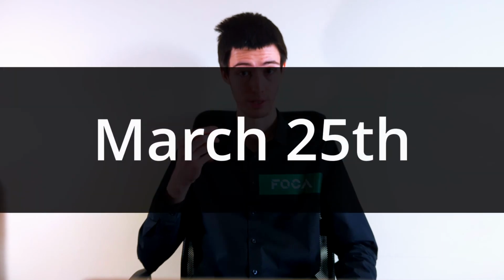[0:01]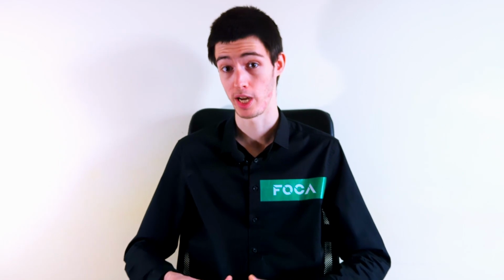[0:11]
It's March 25th, less than 2 months until Arada. By that time I realized that I couldn't just go with the ORCA one, even though it had such amazing results. The machine itself had many flaws which had to be corrected.
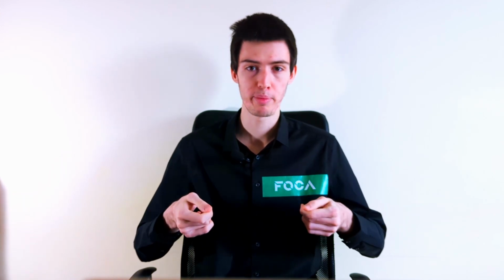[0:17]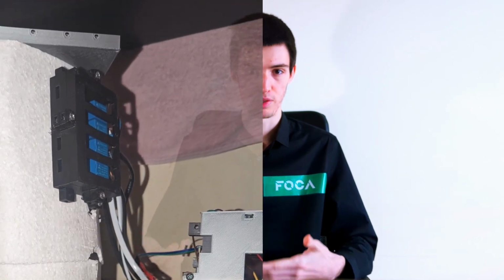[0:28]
First, there was no user interface. If you wanted to change anything in the code, you would have to manually move with your laptop from your workspace all the way to the ORCA one, plug in the cable and then hit upload. And I just couldn't get my head around the fact that if any of those AC cables would touch each other, then we would all burn the magical spark.
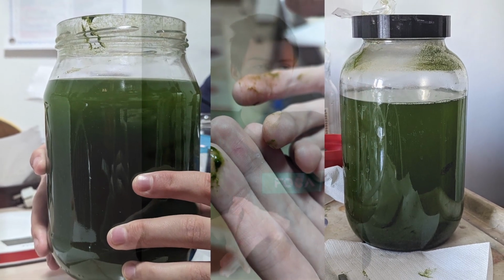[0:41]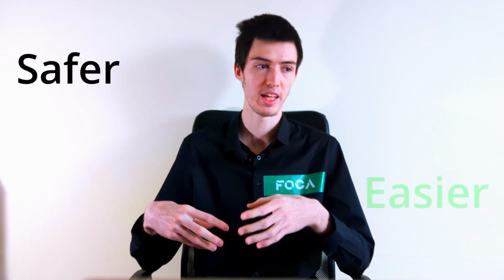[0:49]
Not only that, but the enclosure's door also had a slight play, so inevitably some heat would be lost to the outside. Now, my cultures have grown exceptionally well even with all these flaws, but there's a saying that if you can't make it better, then do it. With all of that in mind, I really just started thinking what would be safer and easier to use for anyone that owns an ORCA.
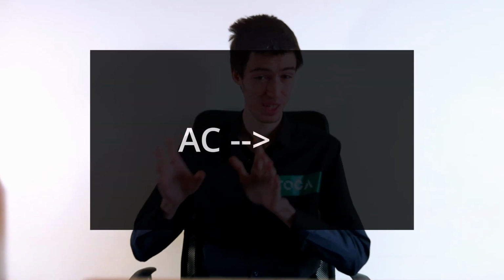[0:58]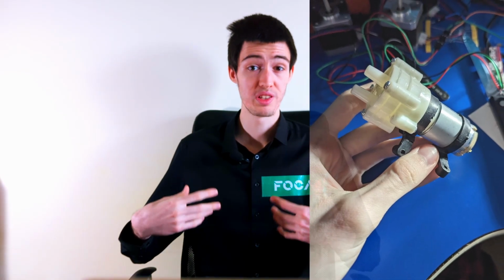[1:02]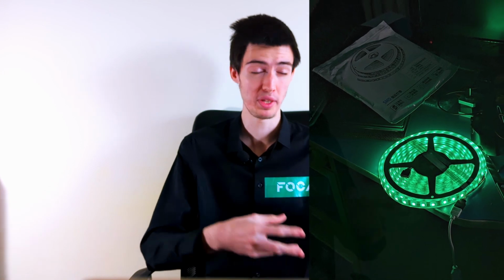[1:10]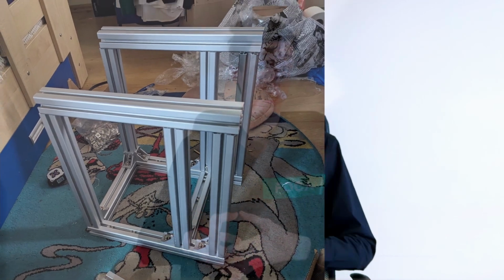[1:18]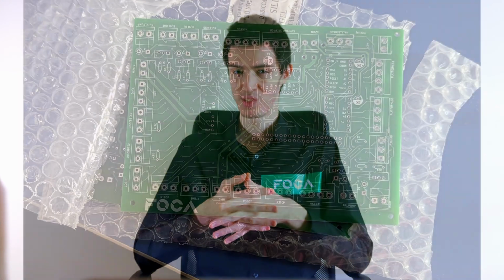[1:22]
So first, I changed pretty much anything that was on AC to DC, added a brand new power supply. The aquarium pump was now a 12 volts diaphragm pump. The LED strip and the light bulb will also be replaced by a 12 volt IP68 RGBW LED strip, which I could also place directly in the water. And to support all these amazing changes, I decided to make a much more rigid structure, which was now made out of aluminium.
And it was also time to centralize all the wirings. Let's face it, it's extremely unpractical to have to go to your machine every single time you want to upload a new firmware. So, let me introduce you the Raspberry Pi. As a quick disclaimer, this is Raspberry Pi 2, all the other Raspberry Pis I have are either burnt or in one of the ORCAs. And by replacing the Arduino with one of these, a whole new world of possibilities opened to me, and that including adding a real camera.
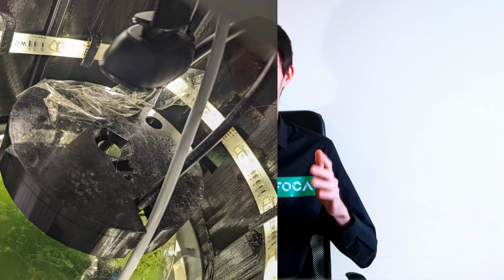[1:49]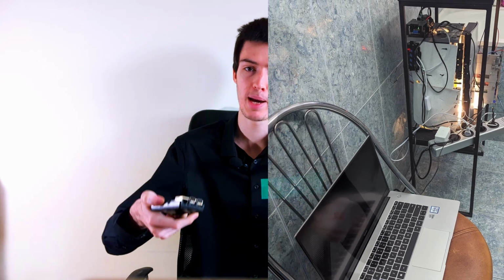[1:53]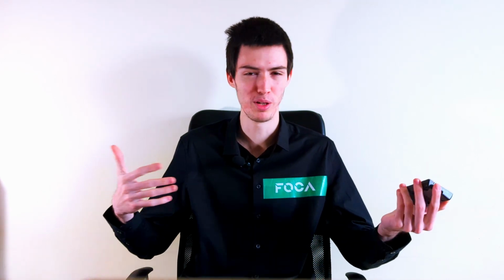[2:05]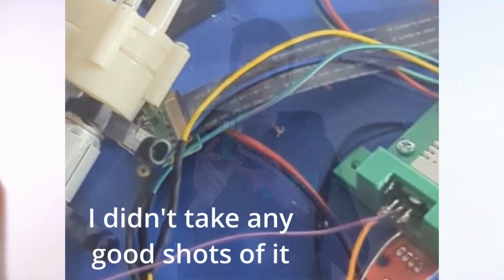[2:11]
Because yes, the ORCA one did have a camera, but it was a USB one, and you were supposed to add your laptop on top of the shelf you were sitting on and watch it from there. And to be honest, it doesn't sound good at all to have your laptop stuck on your ORCA. And say you have multiple ORCAs, then what are you going to do? Buy multiple laptops, one for each ORCA? What? And the camera that I added is one that connects directly to the Raspberry Pi. What this means is that if you connect it to the internet, then you're going to have access to it from anywhere in the world.
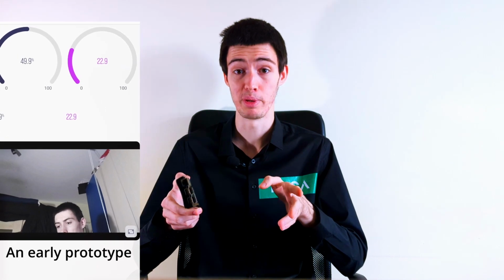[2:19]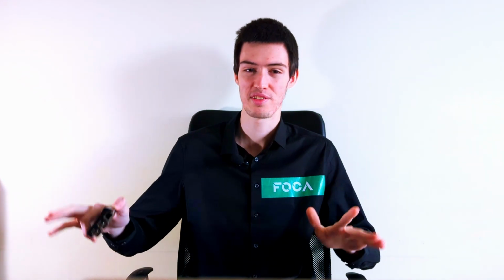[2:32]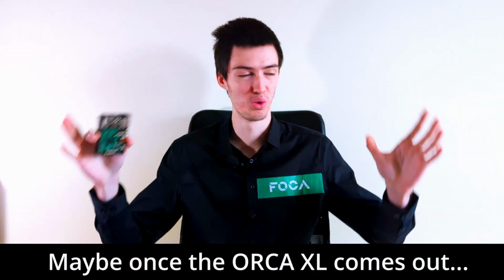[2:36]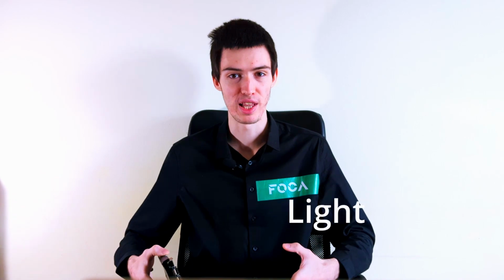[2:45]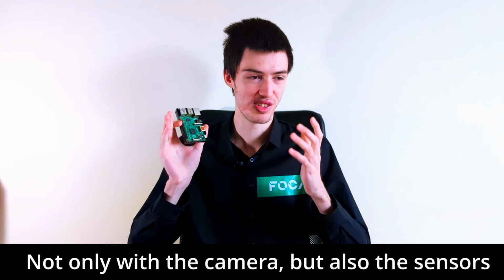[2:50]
And not only that, but you can also run artificial intelligence models on it using TensorFlow or whatever custom model that you train yourself. And this is a huge improvement from the Arduino, because imagine an AI just taking care of your entire cultures. Say you have multiple bioreactors, all of them sitting in a huge room, and why would you have to bother to check each and every one of them every single day when you can have a program, a software telling you if they have enough light, if they need more nutrients, if they need more carbon dioxide, and all of this is just so amazing.
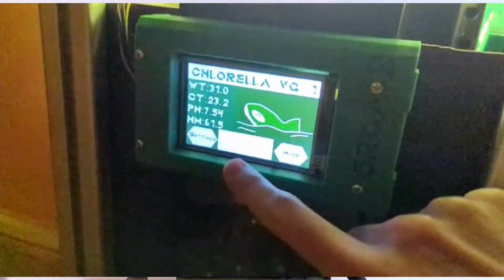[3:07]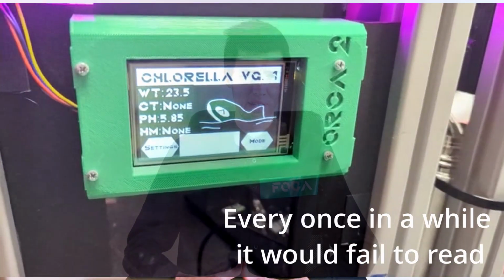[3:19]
Now, getting over the pink and rainbows that using Raspberry Pi was, I also kind of shot myself in the foot by using it, and we'll get on that later. Other than the Raspberry Pi, there were quite a few new parts. Before all, finally, a touchscreen with a friendly user interface, which also worked because the ORCA 1 also had a screen, not a touchscreen, which now allowed us to control the machine from outside the Python IDE, a DHT22 for real-time temperature and humidity detection in a room, where I also shot myself in the foot again.
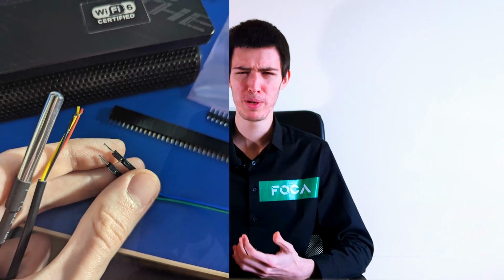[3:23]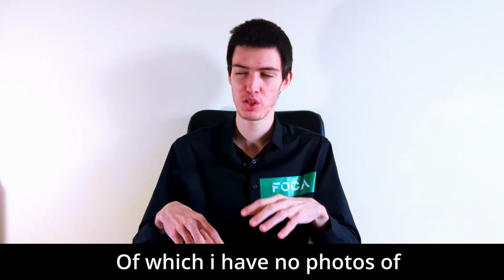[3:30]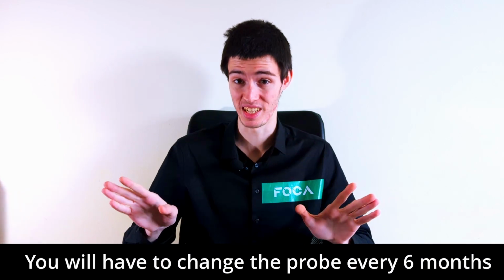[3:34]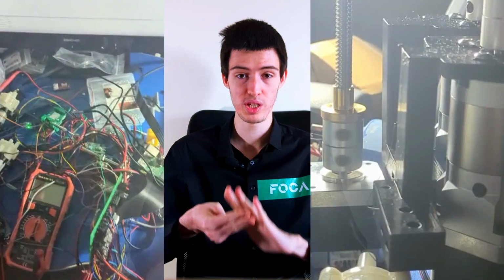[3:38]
Two DS18B20s, which were much cheaper than their DHT counterpart and also much more reliable. A brand new industrial pH sensor which can stay submerged for up to 6 months continuously. Just that easy, no maintenance. And for the movement components, we have 4 end-stop modules, 1 Hall sensor, 3 stepper motors, and 3 drivers for them as well. My wish for a fully enclosed photobioreactor led me to designing a machine which would rise its growing cell up and then retract it while also sealing the chamber.
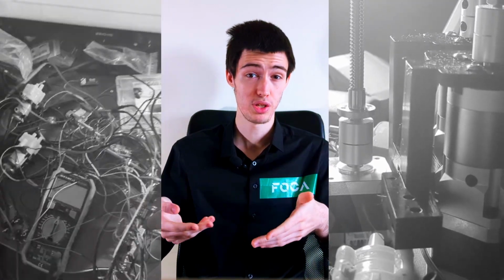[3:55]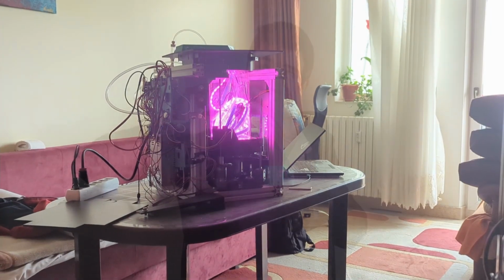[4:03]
This is why I mentioned adding 3 stepper motors and multiple position sensors to determine where the cell is. The reactor has 2 main moving parts: 1, the locker, and 2, the platform. It brings the vase up, and the locker prevents it from spilling any water.
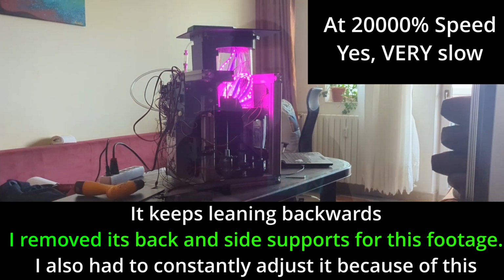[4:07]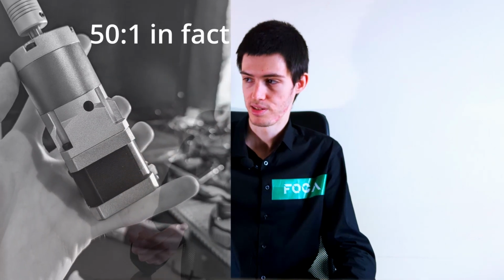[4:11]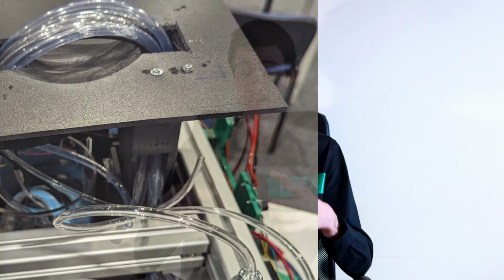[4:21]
This is because even though the stepper motors are really slow, maybe because of the huge reduction ratio gearboxes, with vibrations comes the risk of water getting out of the glass, which is extremely bad when you're working with electronic components. The locker makes sure this never happens, and it also serves an auxiliary function to guide all the cables and tubes inside the cell.
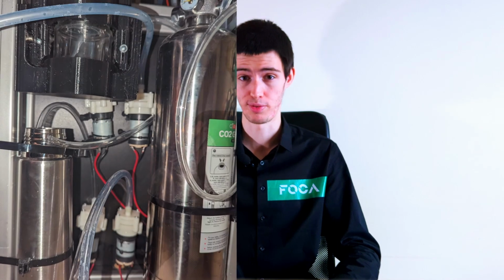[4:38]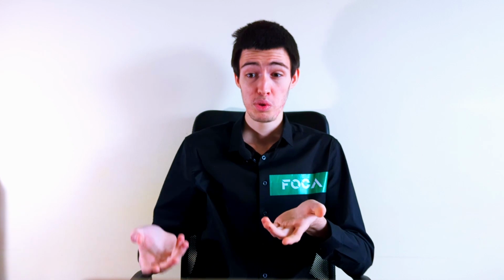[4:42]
For the ORCA one, I had to go every 3 days and manually insert my nutrients mixture into the culture, which was heavily impractical. What if I went outside the city? So, for the ORCA 2, I decided to add 4 different pumps. 1 for the nutrients, 2 for the special in and out, in case you want to extract a sample of your culture and analyze it, or you want to insert some other solution into the water other than the nutrients that you are already giving.
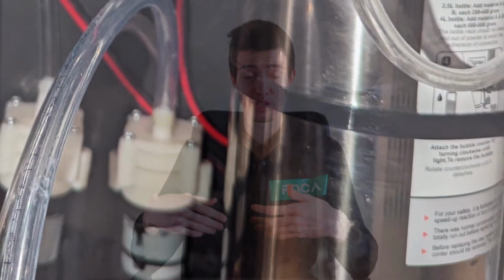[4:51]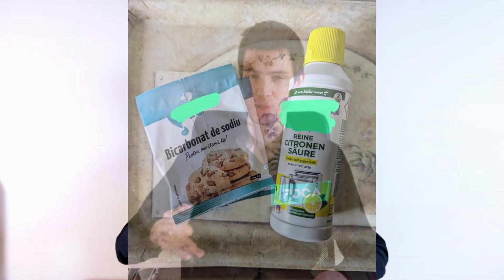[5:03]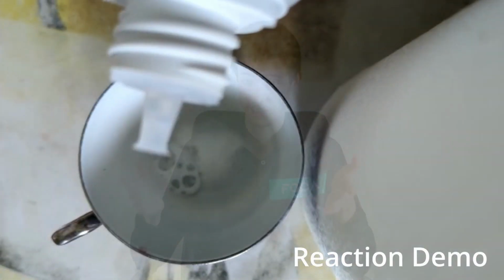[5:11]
And the last pump was reserved for the bubbling and also the heating. We'll talk about that later. And the last addition to the consumables was a 4 liter canister of CO2, which you could easily refill using baking soda and citric acid. What this means is that you don't have to spend any money on those CO2 canisters and you can manually refill them for pretty cheap at home with zero experience.
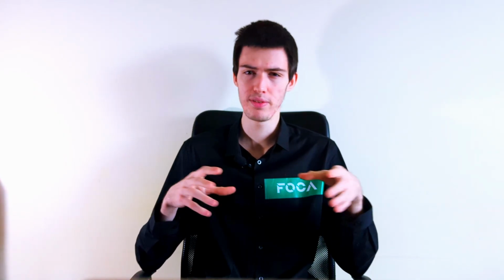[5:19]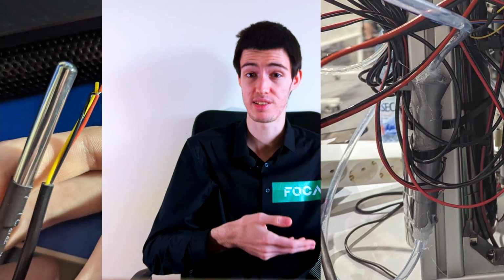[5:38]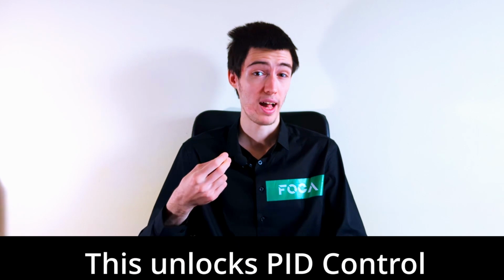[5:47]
I mentioned heating and bubbling were happening at the same time. Well, this is because on the previous ORCA I had a dedicated aquarium heater which was consuming about 10 to 25 watts to do its job, which is at least 10 times more than what the ORCA 2 takes for the same job. On the air puffs getting in the water, there is an annealed PLA station in which lays a DS18B20 sensor and a resistor which constantly heats up according to the values which the sensor is picking up. By heating the resistor to the values that we want, which is being read by the sensor, we can achieve the same results as the resistive aquarium heater, and all of that for roughly 1 or 2 watts.
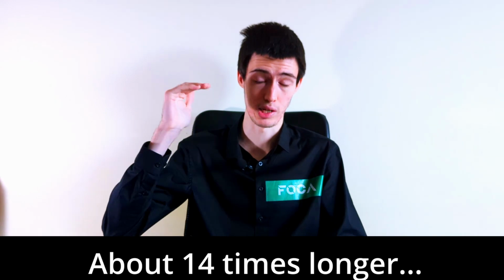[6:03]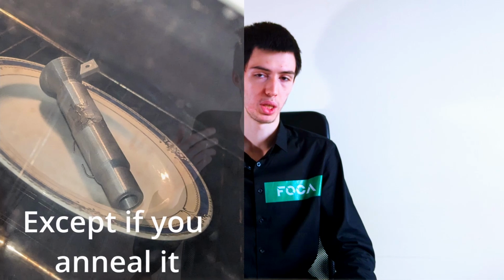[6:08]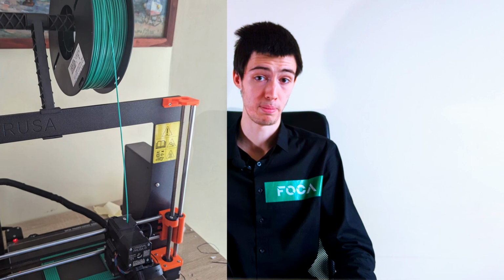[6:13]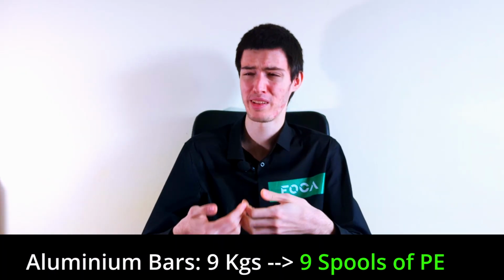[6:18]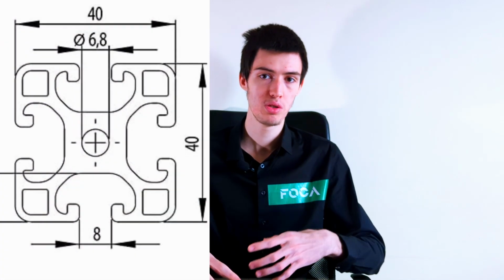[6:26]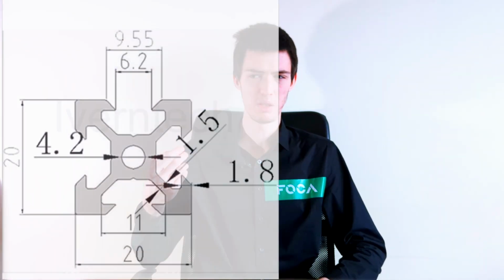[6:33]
The result is a smaller electricity bill, but as a consequence, we'll have to wait longer until the water reaches our desired temperature. PLA is one of the worst materials to work with in warm environments. So for the next machine, I decided to make most of my parts using PETG. My initial thought was to 3D print the entire PBR, which was heavily impractical and really expensive. So with that in mind, I discovered aluminum profiles exist and ordered multiple 40x40 extrusions according to the 3D models that I made, which was kind of a huge overkill in terms of strength, as I could have easily done everything with only 20x20 ones.
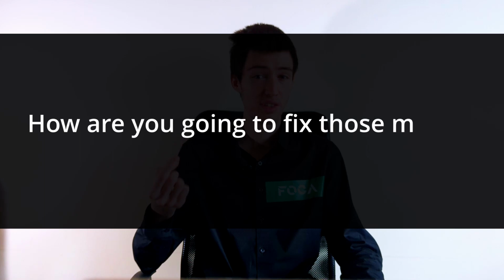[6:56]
As for the walls, there was no way I could 3D print 30x40 centimeter objects on my Prusa, so I purchased some off-the-shelf PVC boards and headed to my uncle's so that he could help me with his professional tools to cut them all for me, where he did an amazing job considering how fast he did them all. Even with the walls and structure ready to rock, there was still one question: how are you going to fix those motors and linear rails on the bottom of the reactor?
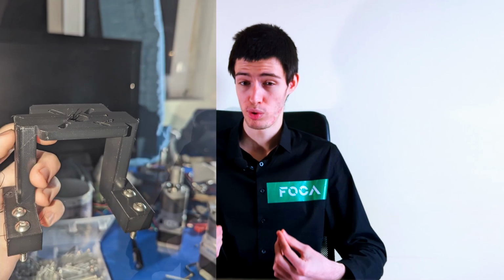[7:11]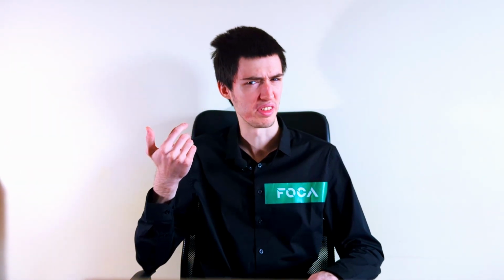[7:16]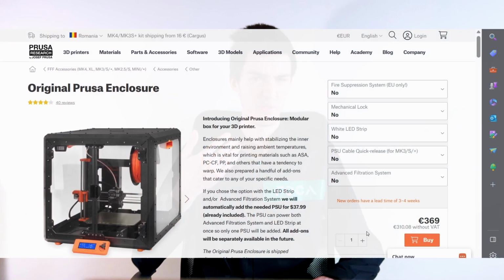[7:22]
Which brings me to polycarbonate. Also known as one of the strongest 3D printing materials, it is perhaps the king of DIY 3D printing. So I decided to give it a shot on my Prusa and print the most critical and stressed parts with it. Ideas are all good and all, but how are you going to print it? Polycarbonate requires an enclosure, otherwise it's going to warp like crazy. And the original enclosure for the Mark III costs roughly 370 euros, and that without any of the add-ons that Prusa offers. So I decided to use my brain and obtain a more affordable solution.
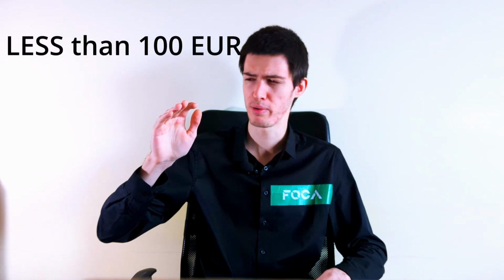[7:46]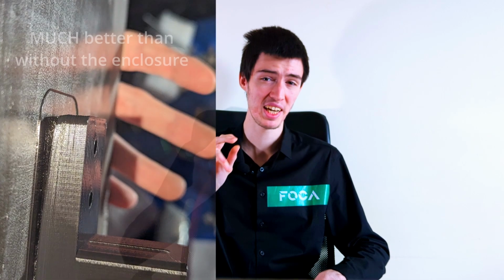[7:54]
Introducing fancy aluminum foil. Just wrap it around the printer, leave a gap for an air filter, and also to be able to reach the power supply and its shutdown button, and a camera on top. And voila, just like that, for less than 100 euros, I would say even less than 80 euros, you've got yourself a kind of functional enclosure, which will print polycarbonate just fine with only a tiny bit of warping.
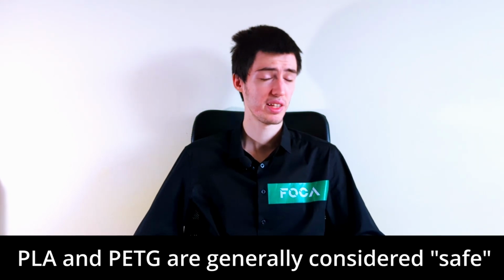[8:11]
The rest of the 3D printed parts were all made with PETG, except for the heating chamber, which allowed me to remove the enclosure and finally be able to breathe well in my room, as polycarbonate is known to be toxic due to the presence of bisphenol A or BPA. With PLA and PETG, you can easily stay in the same room with the printer.
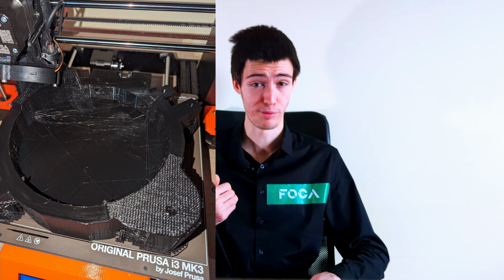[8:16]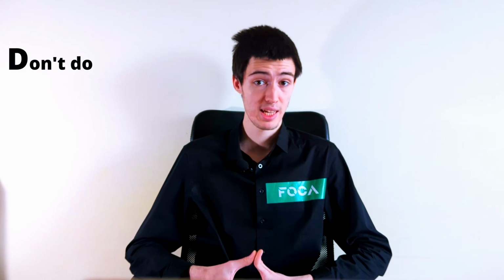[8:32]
And as a fun fact, my longest print, the Sail platform, took 4 days to print. This means the Prusa has been working continuously for more than 96 hours. Aside from the printer being incredibly reliable, it was also super silent, as since I had nowhere else to place it, I slept in the same room as the printer while it was on. And honestly, I didn't even notice it.
Obviously, nobody should be spending so much time in the same room as the printer you're using, but because of space and financial constraints, I had no other option. If the ORCA 1 was completed relatively easily since it cost roughly 600 euros for all the materials and components, the ORCA 2 was obviously a much bigger challenge for my family.
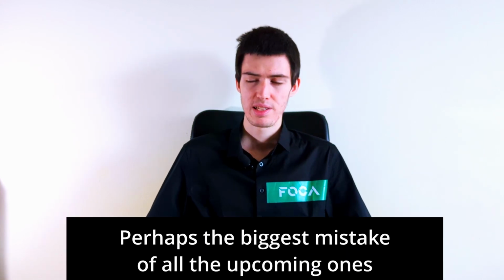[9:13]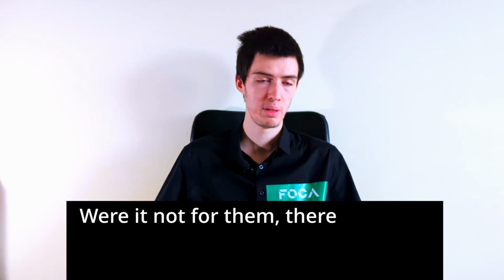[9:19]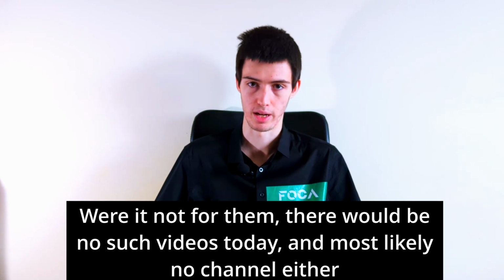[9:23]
To achieve this project, we did have 2000 euros sent to our high school from some amazing people that decided to sponsor my projects, but due to a couple of reasons we were not able to access them. Having made such huge mistakes, it meant we had to rely on our own funds. Here, I'm incredibly thankful to my family for supporting me in everything that I've done, because the funding of ORCA 2 was no easy task.
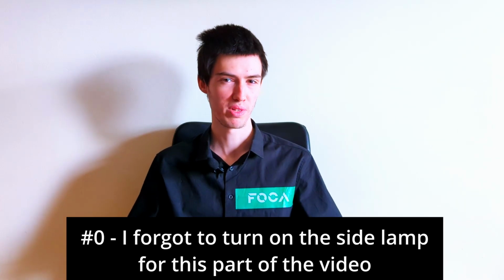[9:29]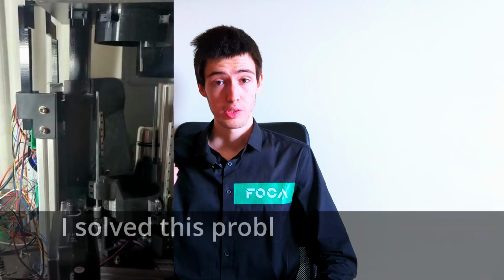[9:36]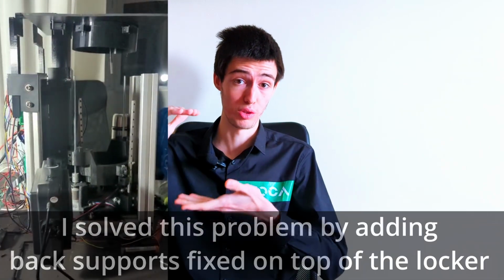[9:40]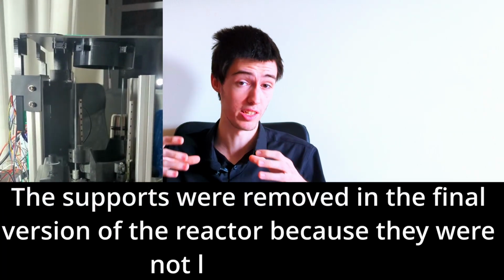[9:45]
There are two major mistakes that I made during the ORCA 2 development. Firstly, the locking mechanism is kind of non-functional due to the fact that by design it doesn't have any support to keep it perpendicular to the ground. And whenever you try to lift it, you have to manually hold it by hand in a certain position so that it lifts up. Otherwise, it won't work.
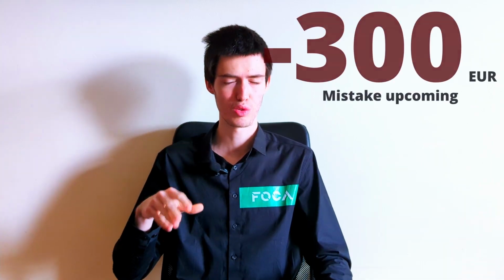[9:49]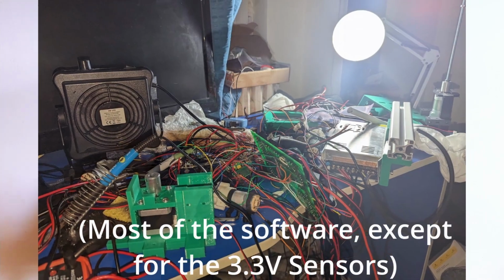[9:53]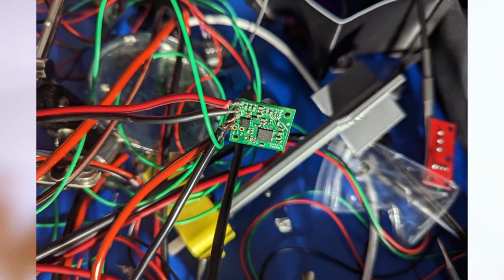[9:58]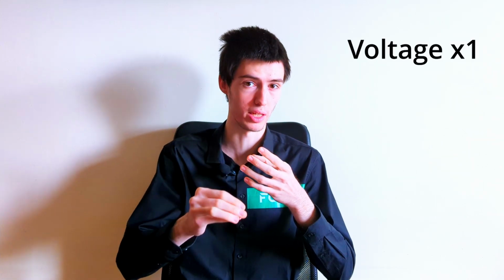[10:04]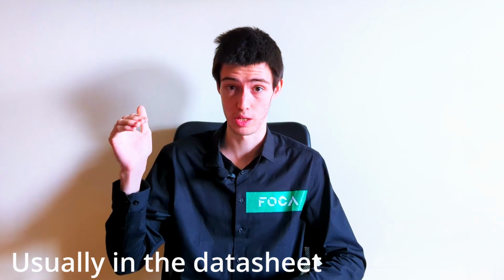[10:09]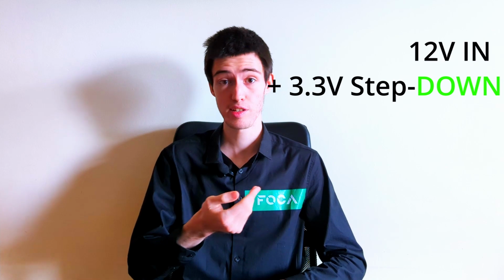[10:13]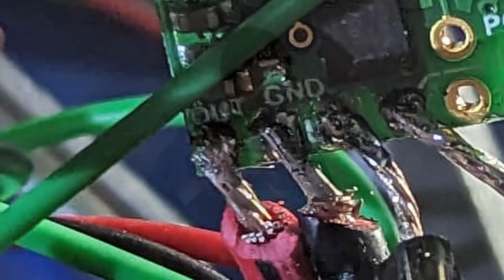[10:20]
And secondly, just 2 weeks before the contest, everything was done. The motors, the Raspberry Pi, the sensors were attached to the main board. And what I did was to attach the 3.3 volt step-down modules to the system. So what step-down modules essentially do is that you input some voltage and they're going to output a certain fixed voltage which is rated by the manufacturer. Say you input 12 volts, if you have a 3.3 volts step-down module, then that is going to output 3.3 volts. Now, of course, any step-down module has some input pads and some output pads.
And the way you should wire it is that whatever comes from your power supply should come to the input, and whatever goes to your electronic sensors, whatever, is going to be on the output. Well, what I did was to invert the channels, and instead of connecting the power supply to the input, I connected it to the output, and the sensors, instead of being on the output, they were on the input. And that was a devastating mistake.
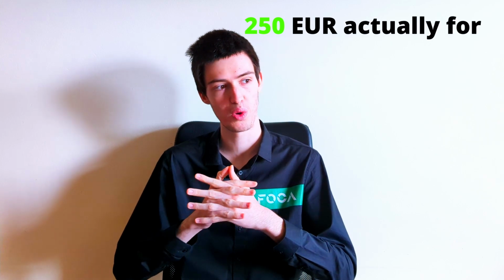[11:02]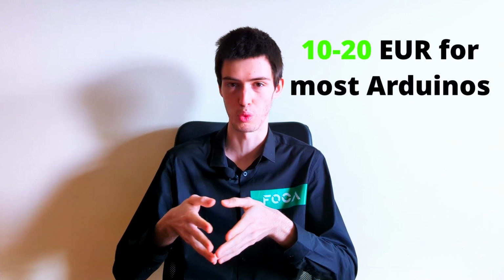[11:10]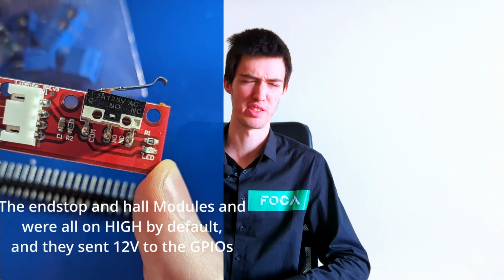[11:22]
As I mentioned previously, by using the Raspberry Pi instead of the Arduino, I kind of shot myself in the foot, because to replace a Raspberry Pi would cost you around $100 to $200, depending on which model you got. Whereas for an Arduino, you can easily find one for $10 to $20 or euros. They're really cheap. And by getting in 12 volts from 7 different channels, 7 different pins on the Raspberry Pi, the board was completely done.
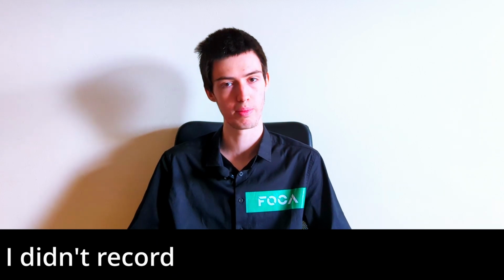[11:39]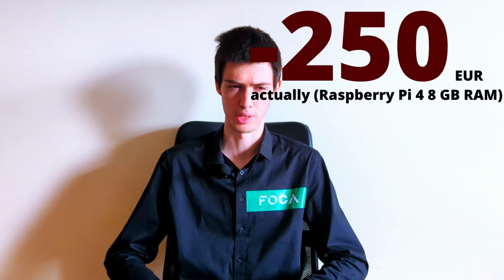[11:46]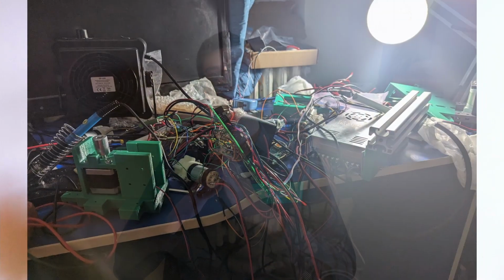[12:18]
And even though I felt really bad about what I just did, I knew I had one more chance. So my electronics teacher, he's not actually from high school, he's from somewhere else. He was kind enough to send me a Raspberry Pi 2 from his inventory. I looked at the electronics, I looked at everything I could to see what was the problem, but the only issue that I spotted at first glance was the DHT sensor being wired the opposite way.
So the ground was to the VCC and the VCC was to ground, and that alone I don't think was capable of sparking and getting all the smoke out. I did fix that problem, yes, and I started checking again to see if there were any problems, and I didn't see any problems. I thought it was from the sensors, not from the step-down modules. I thought that they're from Pololu, and Pololu is supposed to be one of the best step-down module manufacturers, so it can't be because of that.
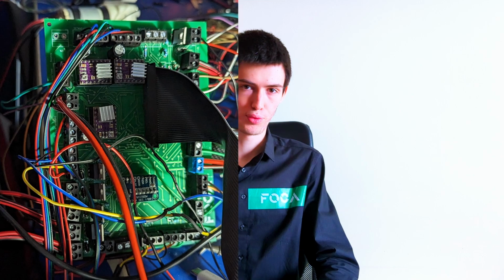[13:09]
And then foolishly I connected everything again. But the only different thing that I made this time was that on the board there are 3 inputs, so the 12 volts, 5 volts and 3.3 volts line. And I disconnected the 3.3 volts line because that was the most recent one I added, and before that everything was working well, and it was working really fine.
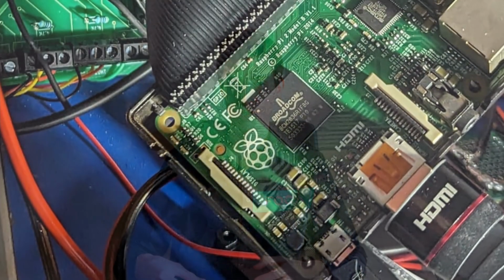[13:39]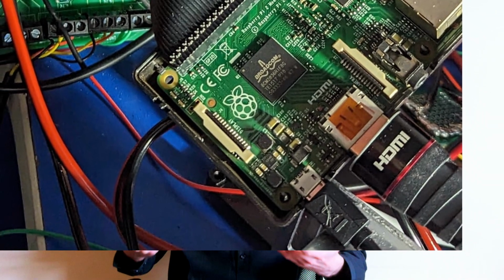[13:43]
I still had the power supply on, I had the Raspberry Pi 2 on, and then thinking I solved the problem, I connected the 3.3 volts line again, and it just blanked. The screen was black and there was no more connection. Also, both of the power LEDs, which are supposed to blink on any Raspberry Pi, were now off. In that moment, I had a thought of quitting, but it's not about that.
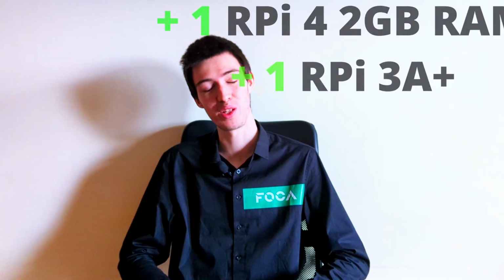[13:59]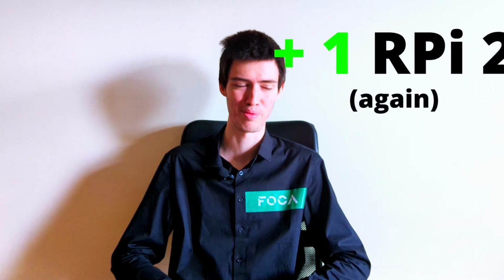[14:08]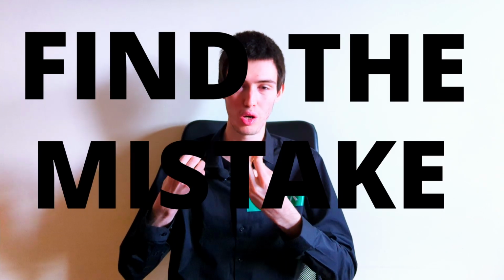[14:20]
And to my surprise, my parents talked to each other, and they told me, here's 200 euros more, spend them on whatever you like. I didn't really know how to respond to that, and with that being said, I also told my electronics teacher what just happened, and he also told me he would give me a Raspberry Pi 2, and I was just amazed by how lucky I am to have such amazing people around me. But even with all of this, I realized that if I wouldn't find the root cause of all of these problems, then I would end up burning all of the brand new Raspberry Pis as well.
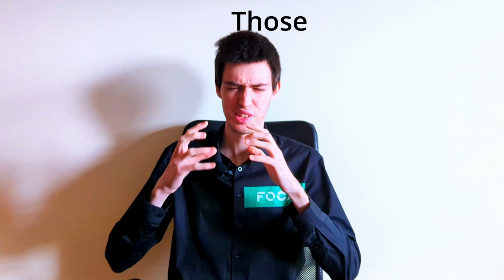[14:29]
And I had like 24 hours to think and just tear down all the wirings and see what was the problem. And as complex as I thought it would be, it was just very simple. As I said, the issue was not a quantum physics problem, but rather just a flipped wiring. And after I resoldered everything, I tested the circuit again. It did not burn. The sensors were also reading.
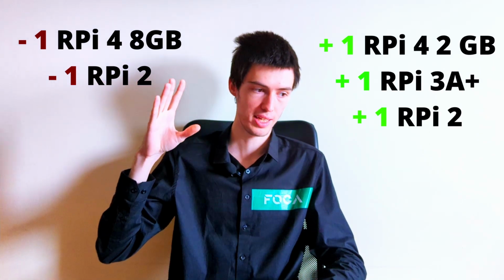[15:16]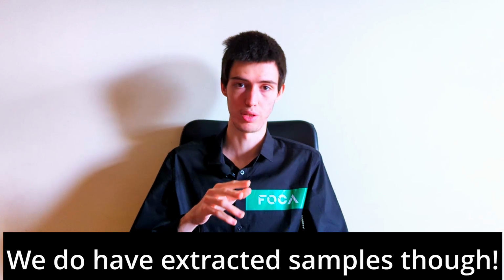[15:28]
By that time, also the 4B and the 3A Plus came, but I wasn't willing to take the risk to burn another 4th version again. Now, with that being said, I just want to thank my family and my electronics teacher again for all the support they gave me, because burning 2 Pis and then being given 3 more to experiment with is, I believe, beyond being human. Because there was just 1 week left until the robotics championship and I still had to do some minor adjustments to the code, I did not take any videos of it while working.
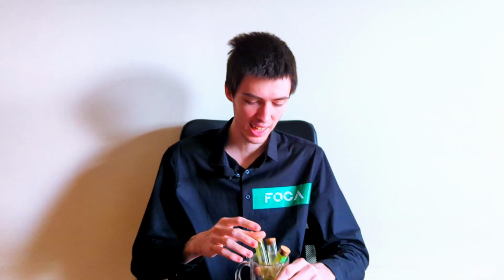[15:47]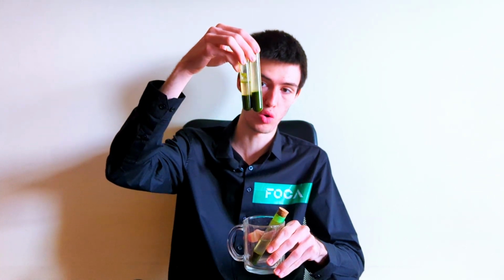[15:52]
What I did was to take about half of the Chlorella vulgaris that I had in my previous bioreactor and insert it in the ORCA 2. And just like that, it worked. And in those 5 to 6 days of staying in the PBR, again, it was a semi-mature culture, they managed to grow so much that I was able to extract exactly 2 samples. These 2 samples are from the ORCA 2 and the only labeled one is from the ORCA 1. Can you tell the difference?
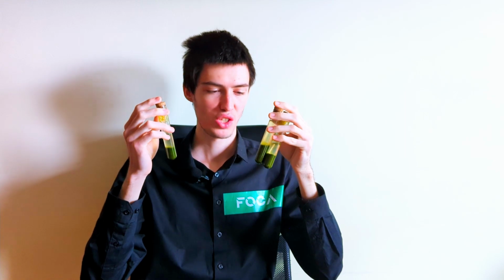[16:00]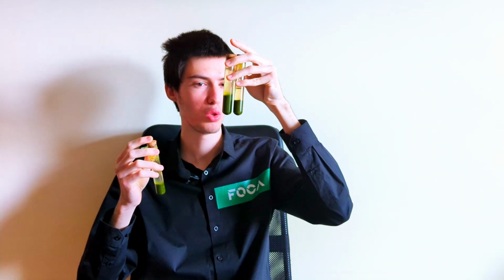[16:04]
I don't think so. Overall, both of the ORCAs have done an amazing job at growing these cultures, but as far as I see, the ORCA 2 seems to have grown them to a higher maturity state. As you've seen, it's just as if time was on our side. Everything was finished exactly in time.
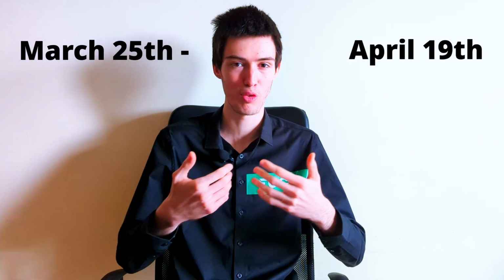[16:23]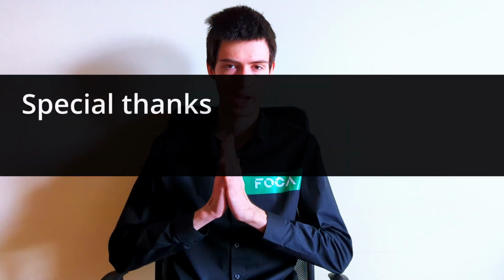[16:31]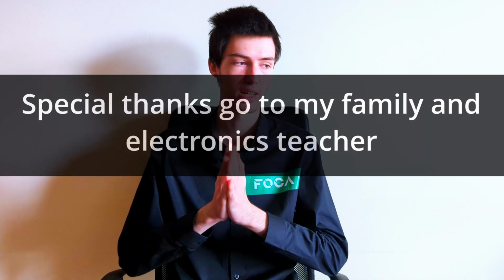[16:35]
I designed, ordered, 3D printed, assembled, and programmed everything. And all of this was just within the 25th of March and the 19th of April. It's kind of amazing what one can do just with his free time and whatever is left during high school. And I'm extremely thankful for everyone who has supported me so far, because without them, I wouldn't be here and today we would have no story to talk about.
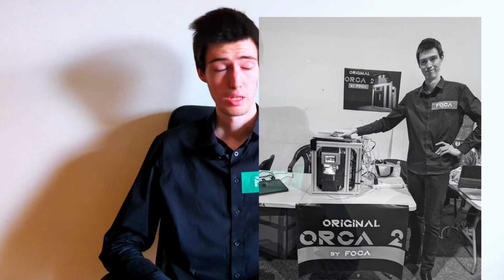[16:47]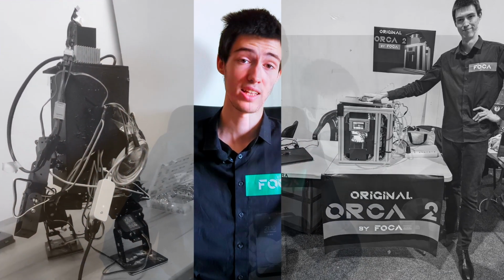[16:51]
What happens next? Will there be an ORCA 3? Will there be an Abrams 2 or perhaps a Candy A2C? I can't say for sure, but what I do know is that any project that I take should be challenging. But perhaps most importantly, it should define the future.